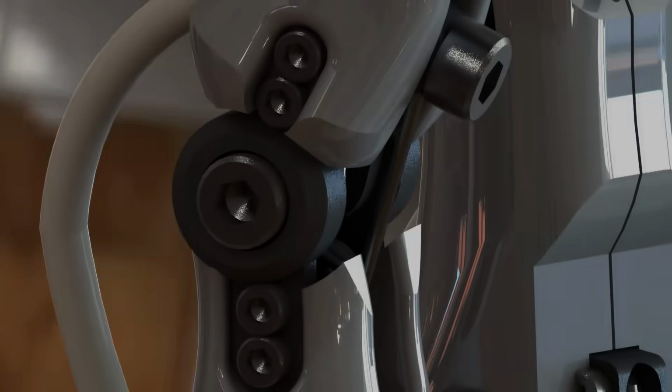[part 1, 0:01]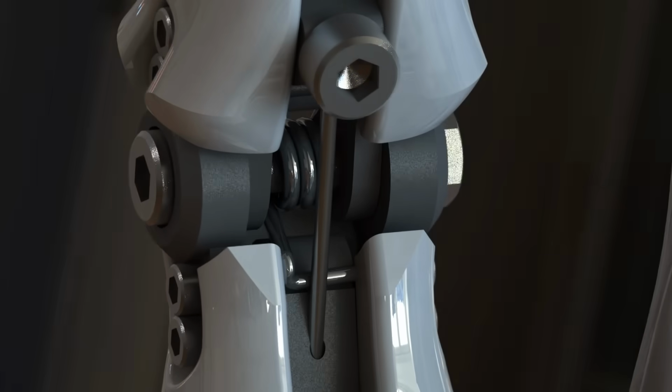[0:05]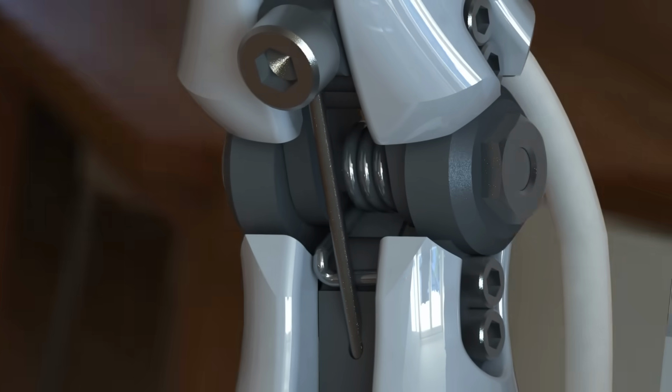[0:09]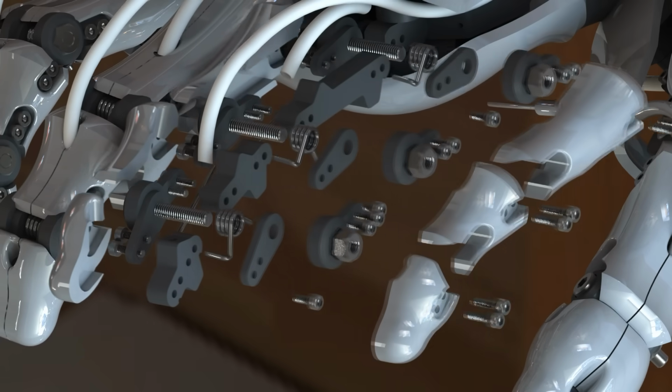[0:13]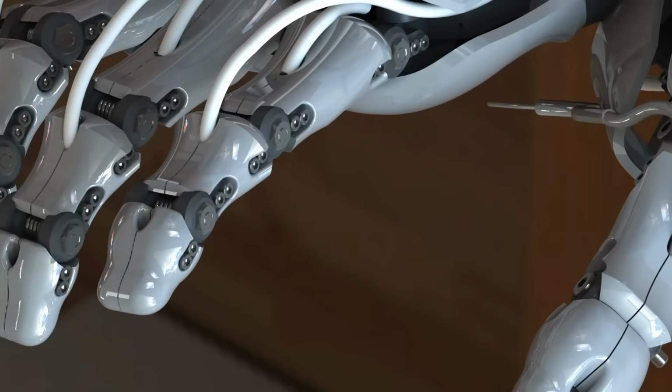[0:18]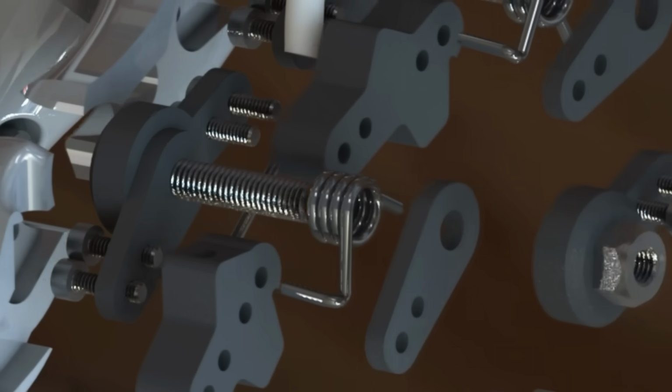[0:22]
So let me start off by talking about some of the joints in the bionic hand. The vast majority of the joints that you'll see are just simple hinge joints, and that includes all of the joints in the thumb, most of the joints in the finger, and a few others here and there. The way that these work is they have a simple pivot, which in this case is just a bolt. Now having a bolt as a pivot is obviously in no way ideal.
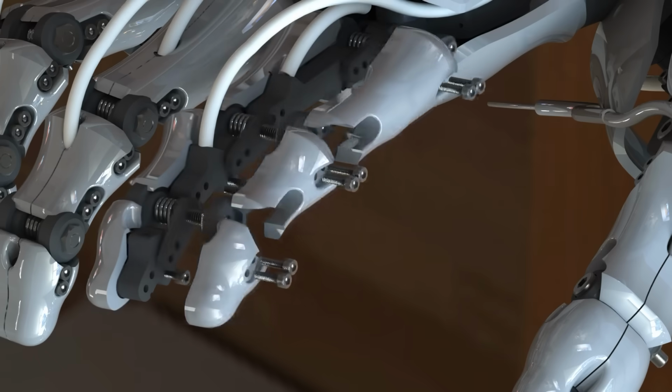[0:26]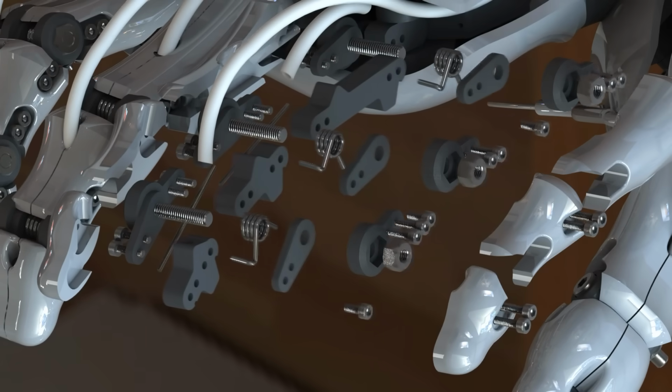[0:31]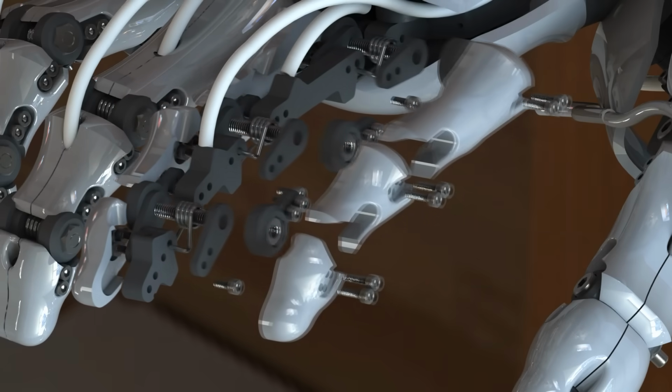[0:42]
The bolts are just kind of there as a placeholder. Obviously in a final thing I would have the bolt only threaded at the very end, so that it would have a nice long shaft to rotate around. But as a sort of proof of concept piece, the pivots are just these threaded bolts.
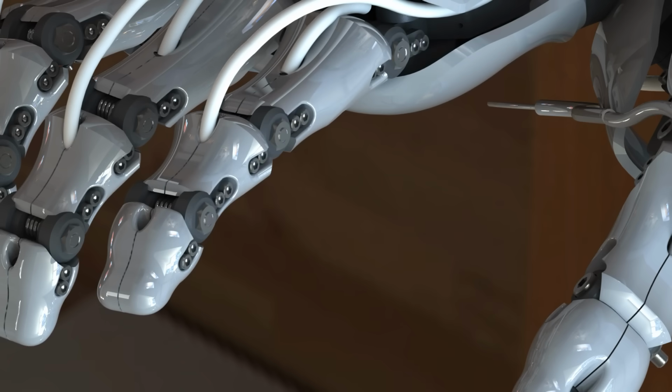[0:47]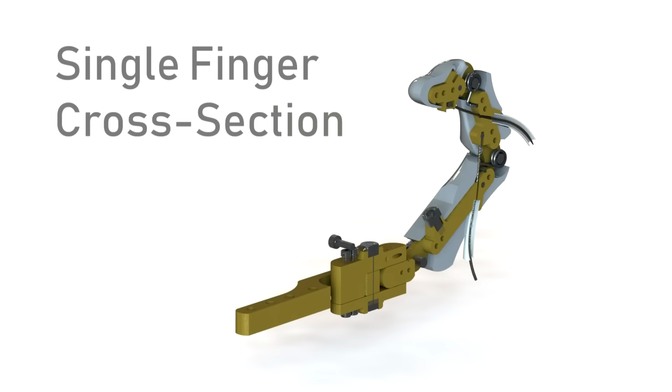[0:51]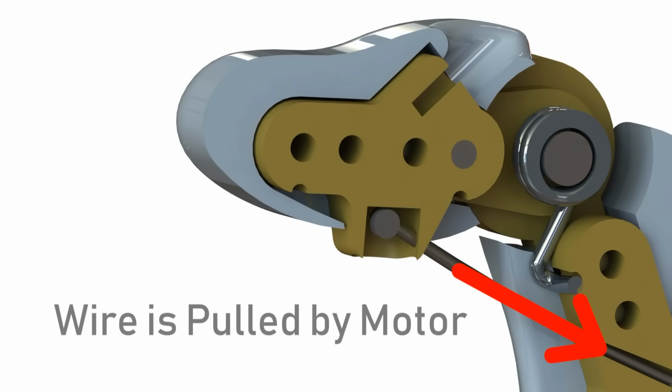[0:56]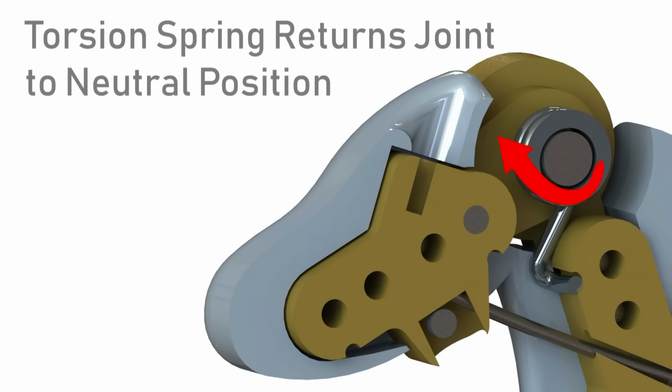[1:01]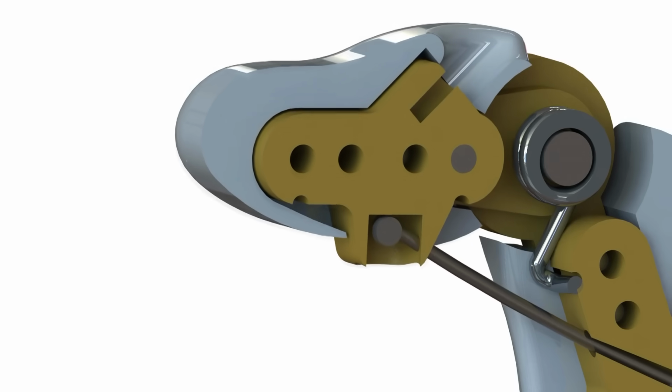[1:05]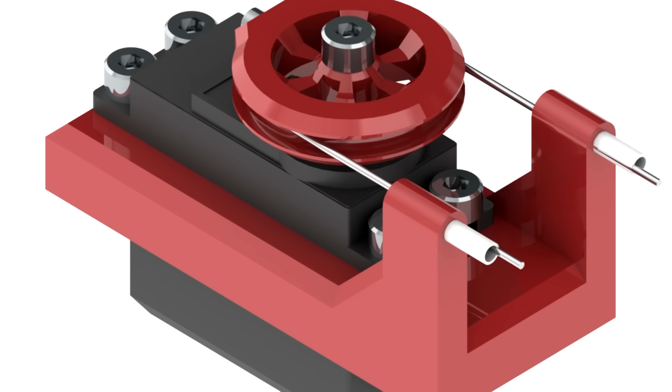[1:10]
Now the way that they're actuated is by using a sort of cable and spring arrangement. All the motors are mounted in the forearm, and those motors have little pulleys on them which pull some cable through a cable sheath. If you think of a brake cable in a bike, you pull the brake, which pulls a little bit of wire through the cable sheath, which actuates the brake calipers at another part of the bike. That's the same kind of idea here, except instead of a manual brake lever that you pull with your hand, it's a motor pulling the wire with a pulley.
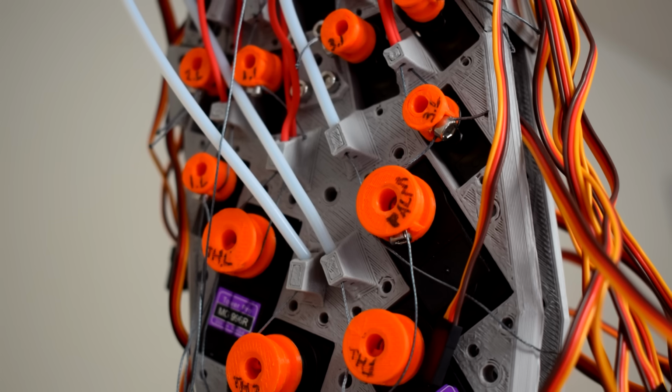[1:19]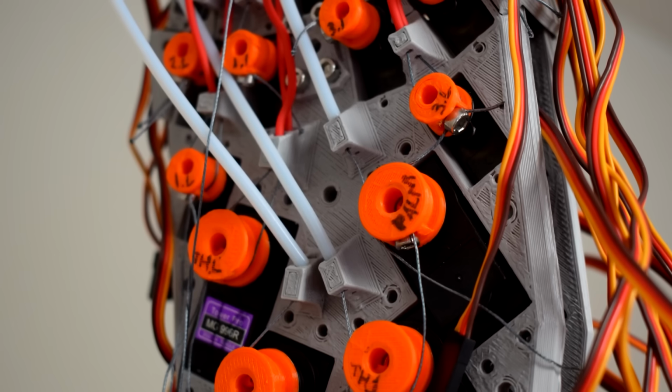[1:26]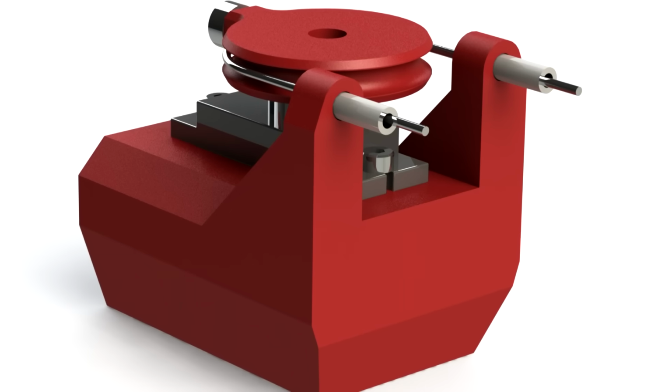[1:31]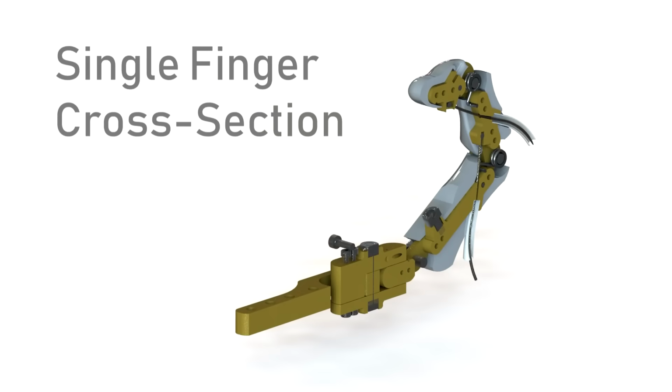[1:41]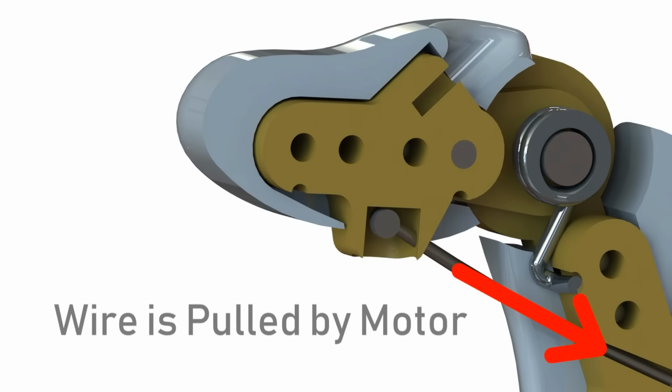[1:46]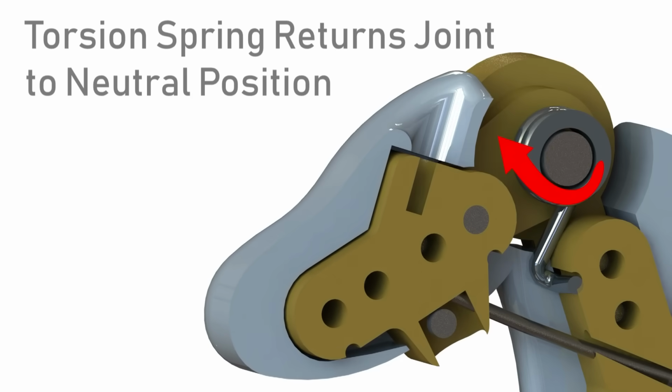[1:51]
So when the motor pulls the cable through the sheath, that contracts the finger by using the inner cable to pull the finger joint downwards, and then when the motor relaxes, a little torsional spring in the centre of the joint, wrapped around the pivot point, returns the finger back to a neutral position and maintains tension on the wire at all times. You'll see there's a little animation of this working. Hopefully that clarifies it if that explanation wasn't satisfactory.
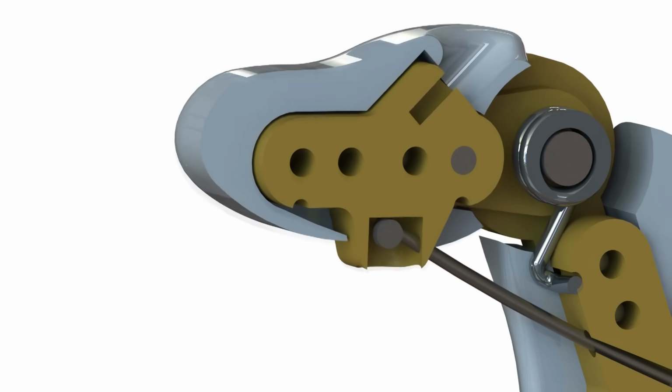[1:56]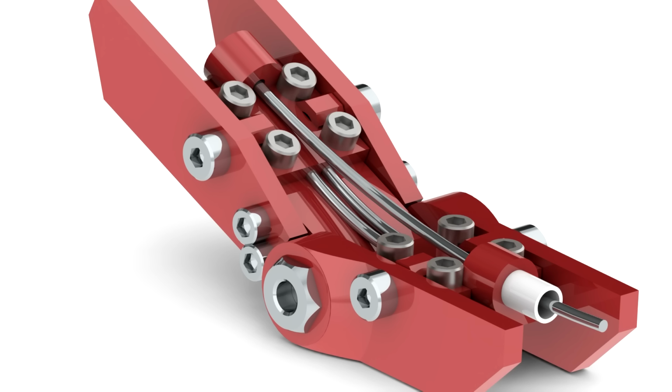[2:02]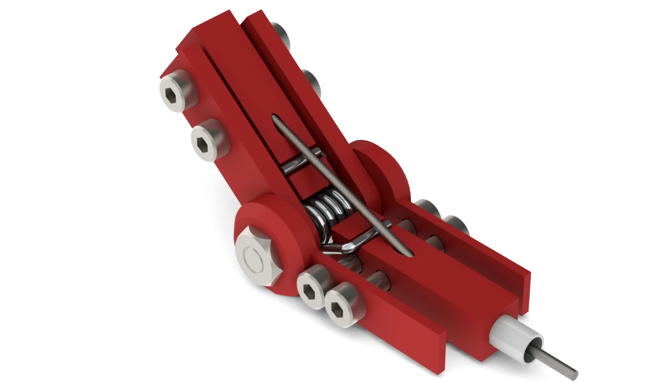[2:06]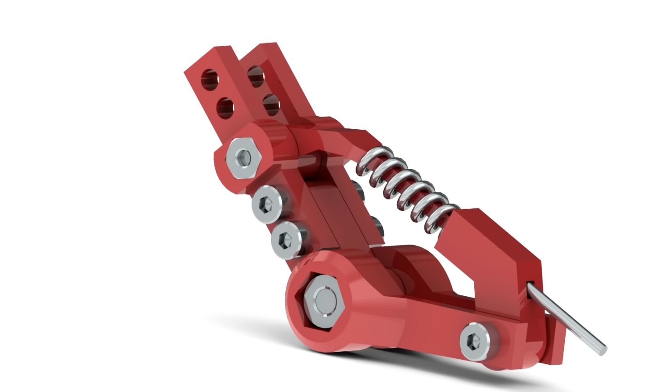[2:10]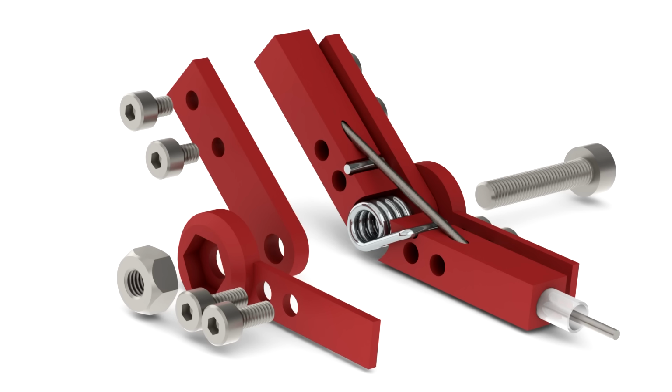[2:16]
Now this sort of cable arrangement is something that's used quite often in animatronics because it's quite easy and simple to actuate something and make it do some quite complex motion without having to have any actuators in the joint or near it even. It can be as far away as you like. But obviously there are some inherent problems with this.
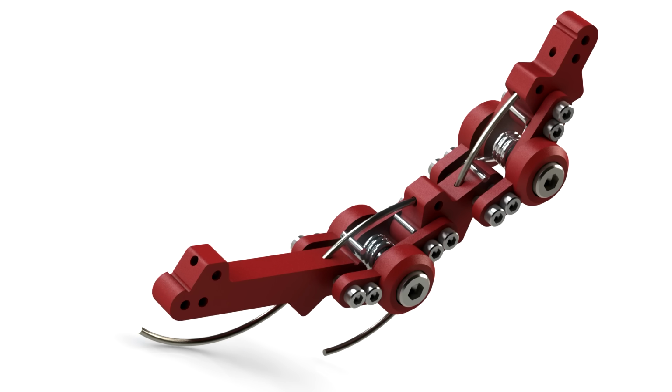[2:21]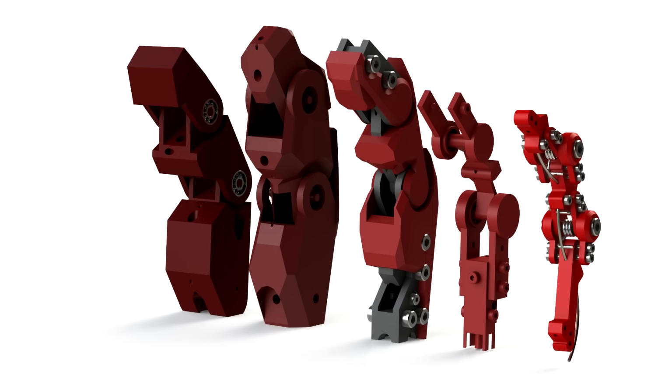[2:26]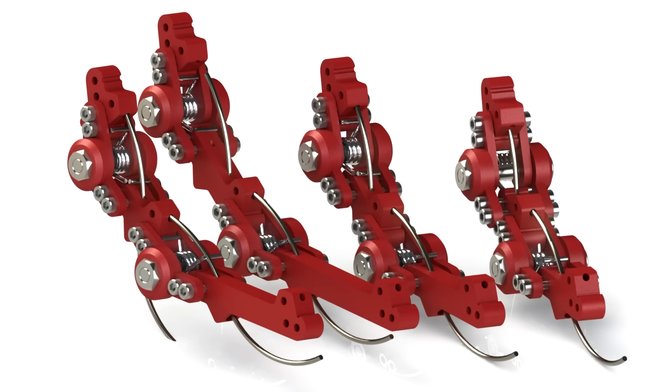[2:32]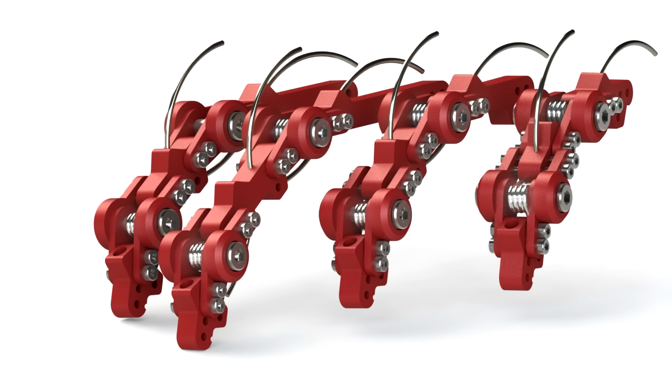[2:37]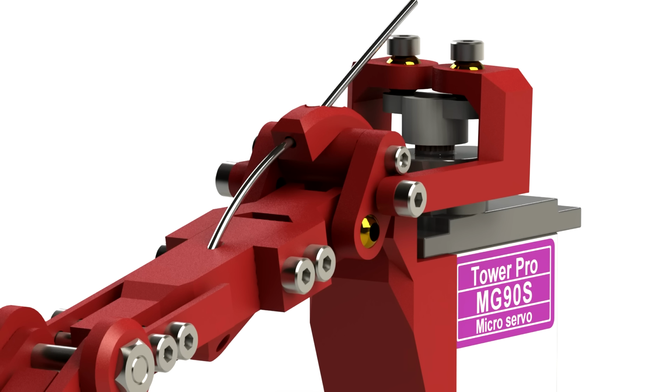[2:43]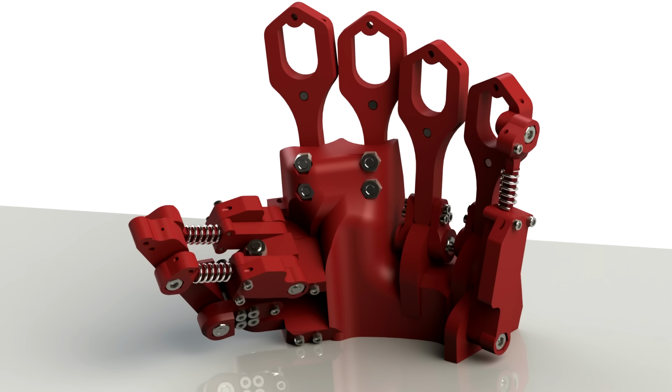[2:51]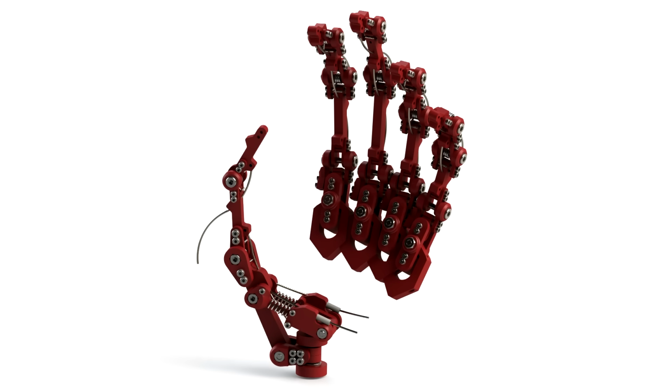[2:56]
The further the distance you put between your actuator and the thing that you're moving, there's a lot of wiggle room between all the components in that chain, and so eventually it is inevitable that components will come out of calibration. Eventually the fingers won't be in quite the same positions as they were to start with, and because the inner cable has room to move in the inner sheath, as the fingers move around and the outer cable is moved around, there's the potential for the fingers to move slightly, just as the tension of the inner cable is moved slightly.
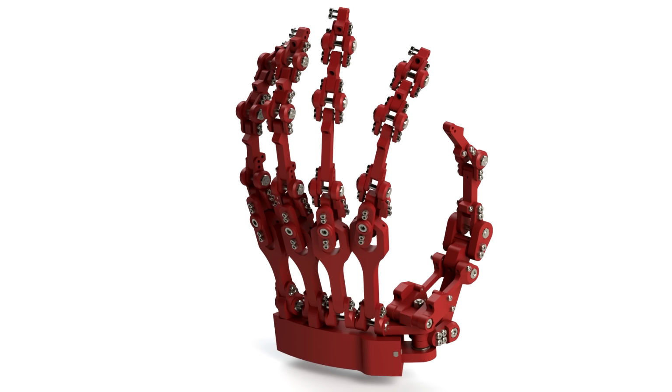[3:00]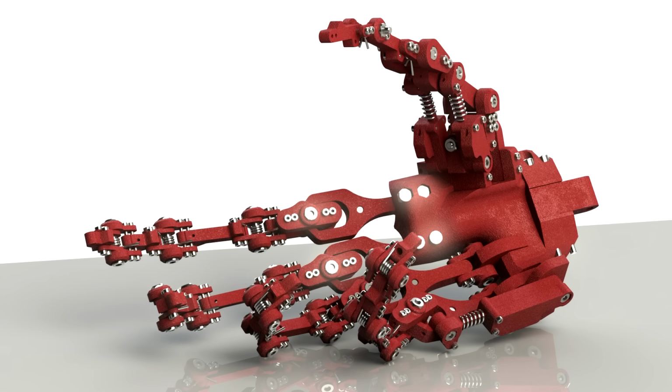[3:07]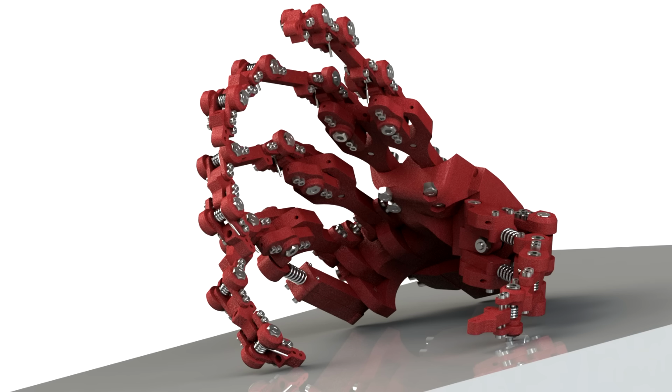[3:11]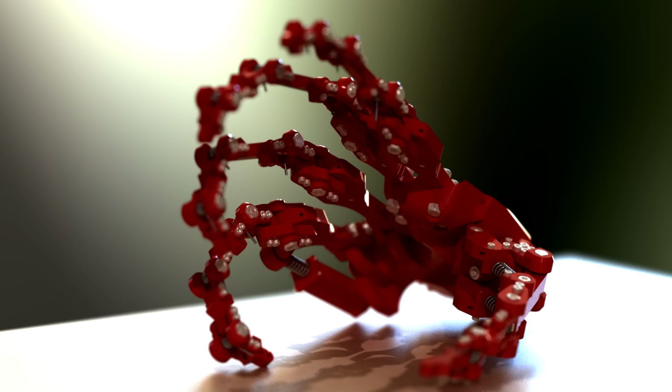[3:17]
If you had an inner cable that was the exact same diameter as the inner diameter of the outer cable, if that made any sense at all, then you wouldn't have to worry about it, but you would obviously have to worry about friction. So for something where you're trying to just get a really lifelike motion and you're not too concerned about the accuracy, then it's not too much of a problem.
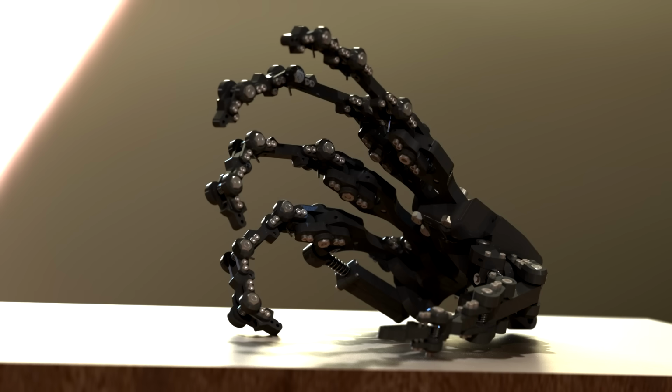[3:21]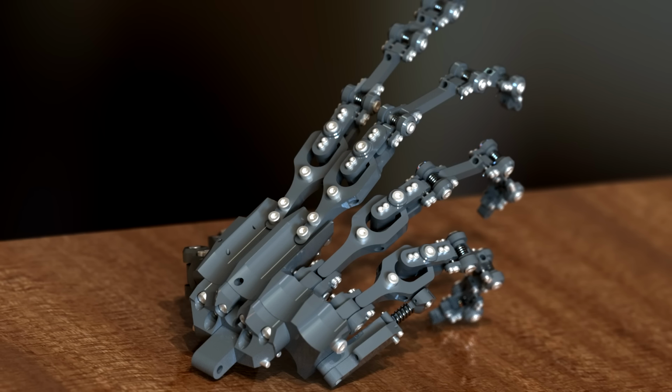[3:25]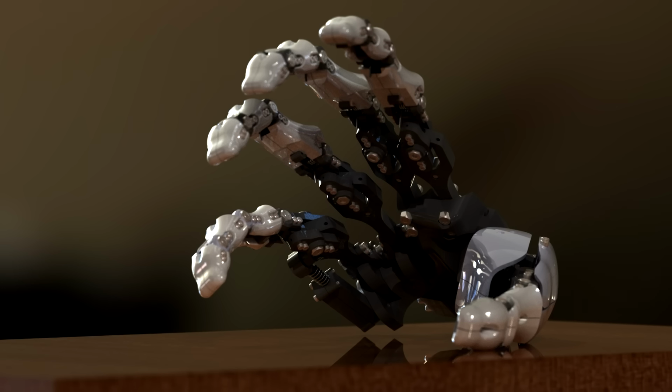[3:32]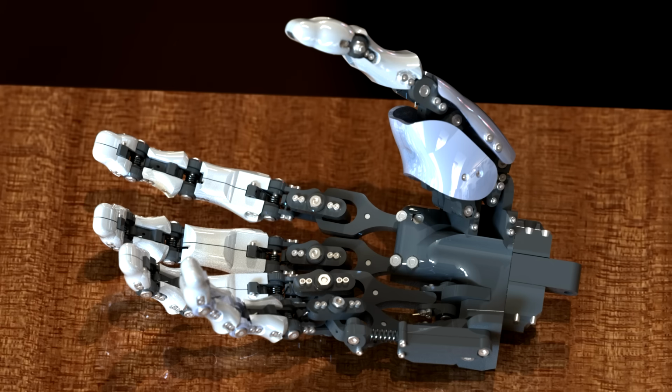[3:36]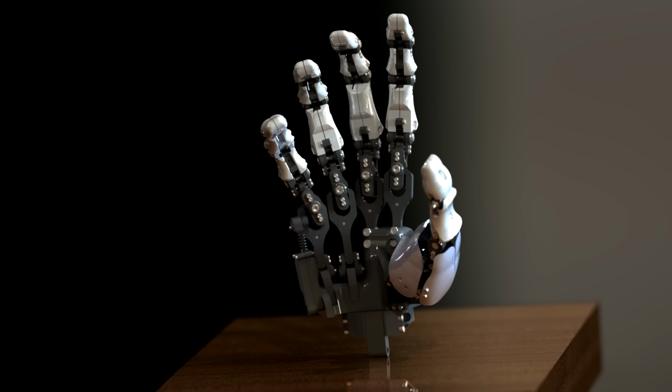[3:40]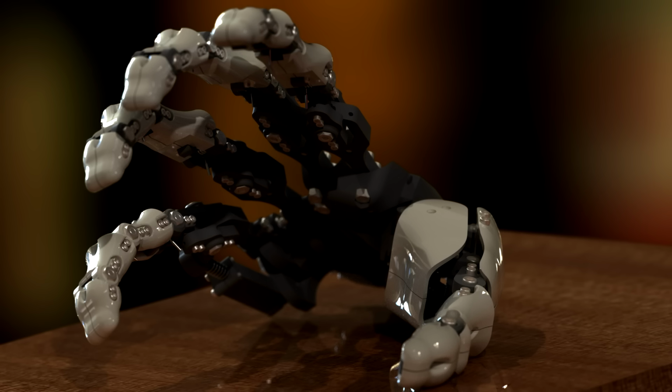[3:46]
The solution would be to have a feedback sensor in the joint itself, like a feedback sensor in every single joint, and then it could be more or less perfectly accurate every time. But obviously that would add a lot of complexity to the assembly. It is something that could be done, it wouldn't be too much trouble. Using the kind of really small potentiometers that are used in the control glove, there's no reason why you couldn't have something like that. And maybe in a future redesign that will be something to think about.
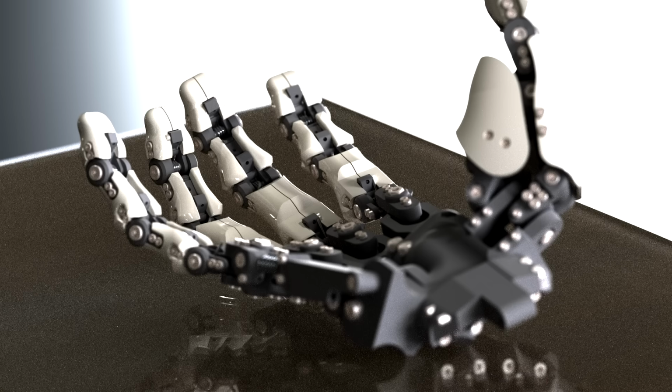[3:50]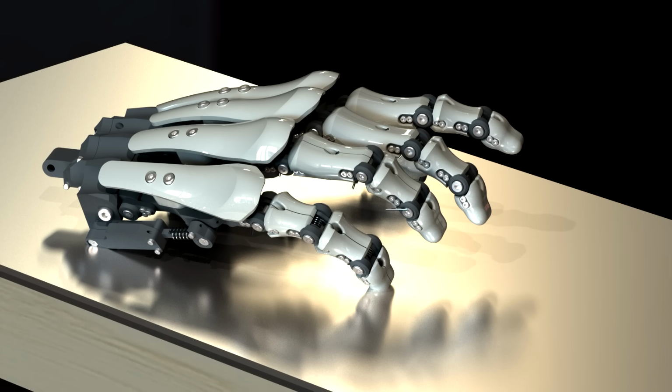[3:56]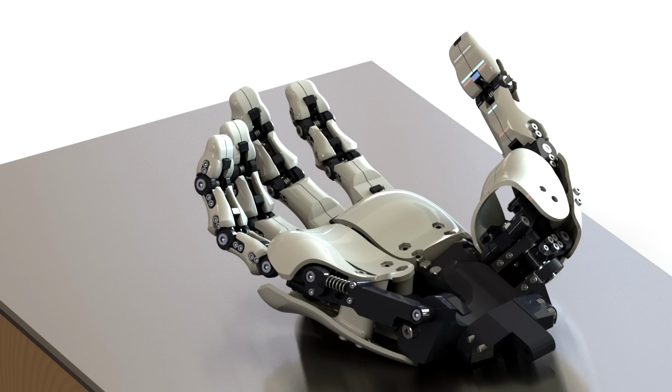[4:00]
If this was used as a real prosthetic hand, you would need something like that, absolutely, because you couldn't be recalibrating it all the time, it just wouldn't be practical. So having a feedback potentiometer at every single joint would probably make the design a lot more reliable.
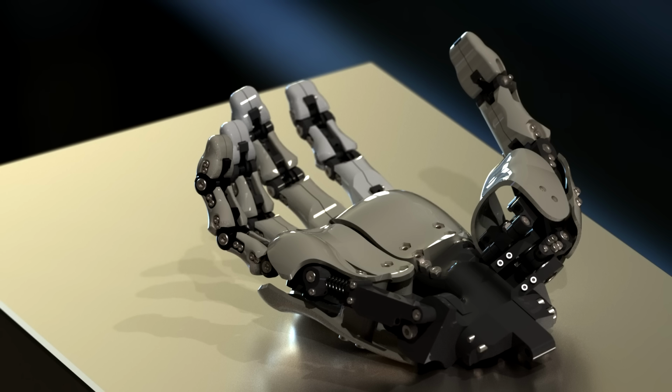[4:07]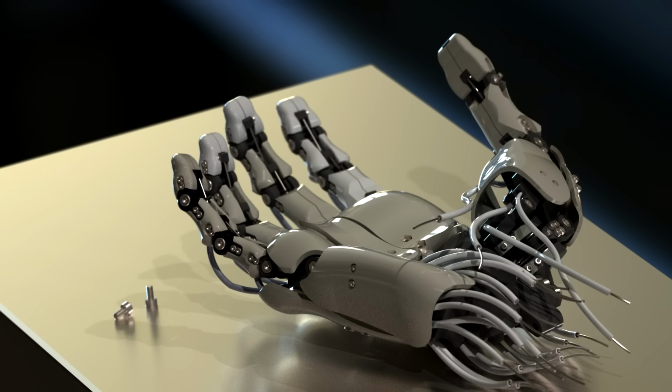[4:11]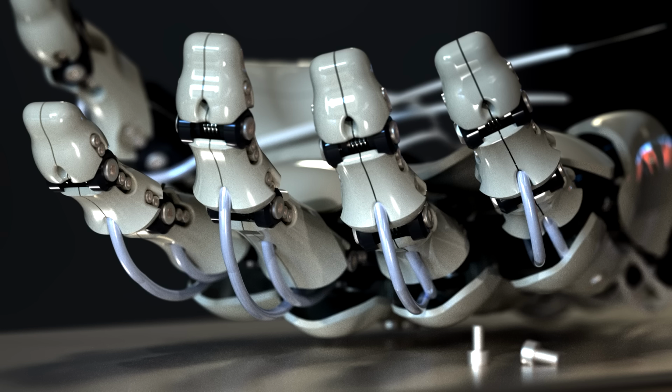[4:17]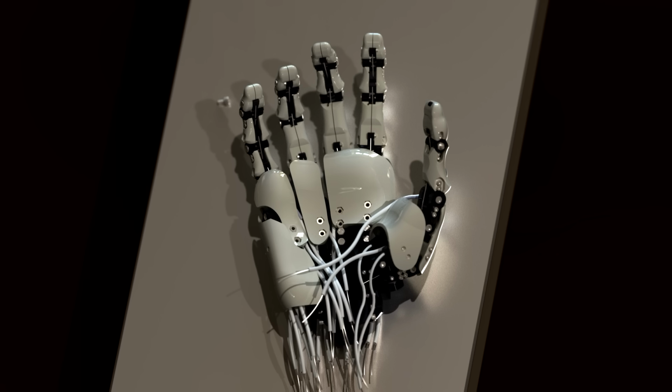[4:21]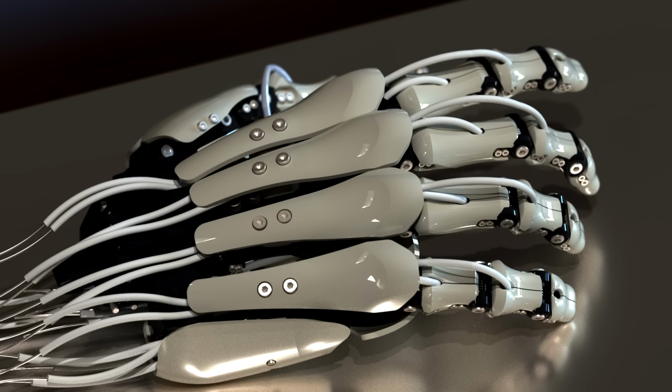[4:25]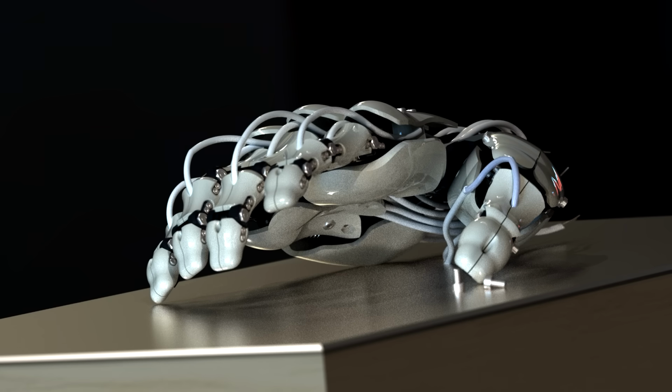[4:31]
But regardless, there'd still be some problems with the pulley mechanism, and most of them you could make a lot better just by using tighter tolerances between the inner cable and outer sheath, things like a better pulley and a better securing mechanism on both the pulley and the point that you're actuating. There's a million little tweaks that you could make that would make this a lot better, but in the demonstrations it did seem to work sort of okay as a proof of concept, you know.
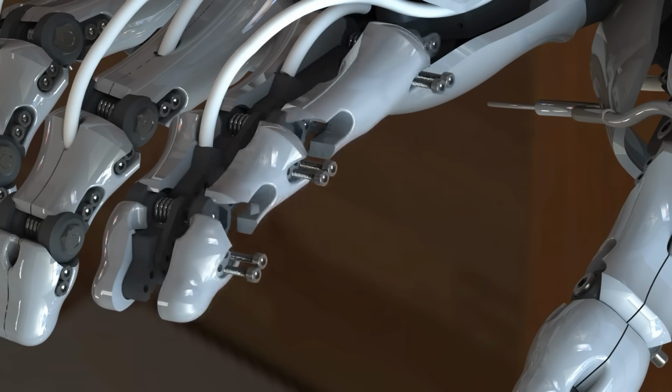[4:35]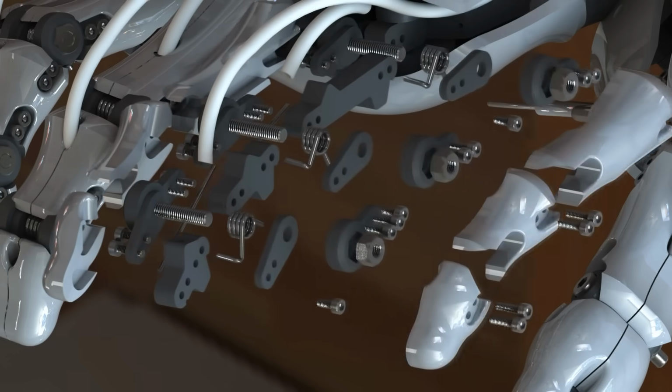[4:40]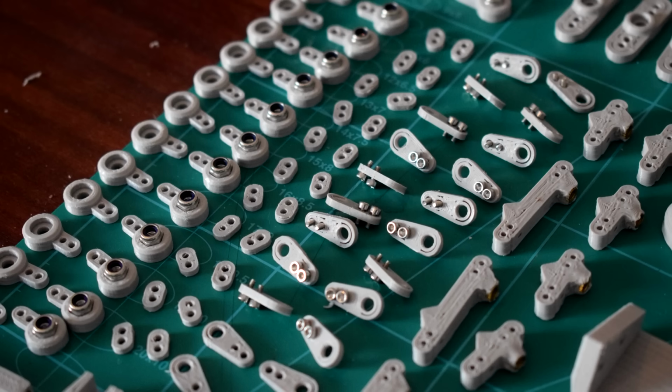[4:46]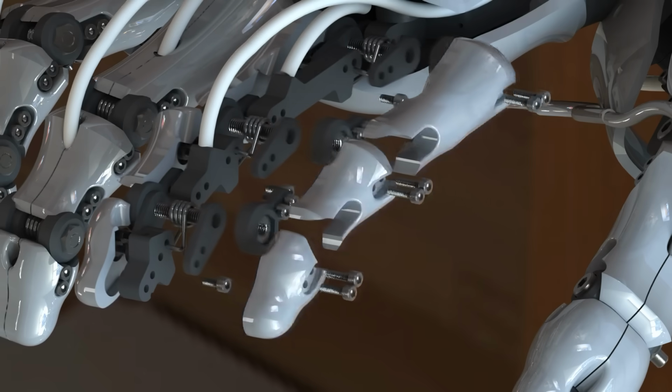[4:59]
So one quick other point I want to make about the hinge assembly. Looking at the exploded view, you can see there's like an unbelievable amount of components in this hinge, when really there only needs to be the two parts that are moving relative to each other and the pivot point, which is the bolt that's going through the centre. There isn't really too much need for any other components than that.
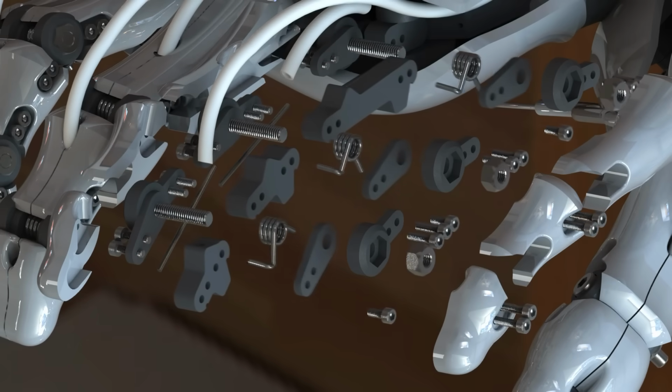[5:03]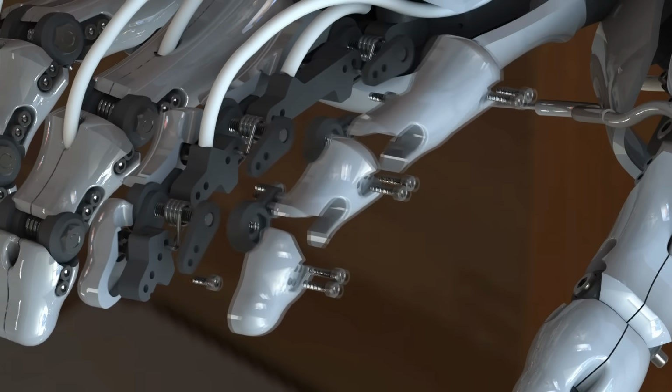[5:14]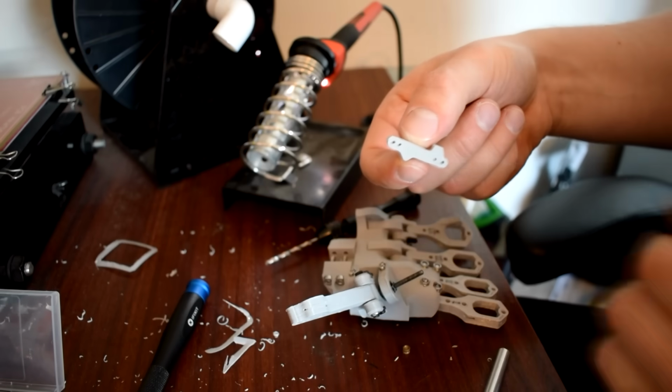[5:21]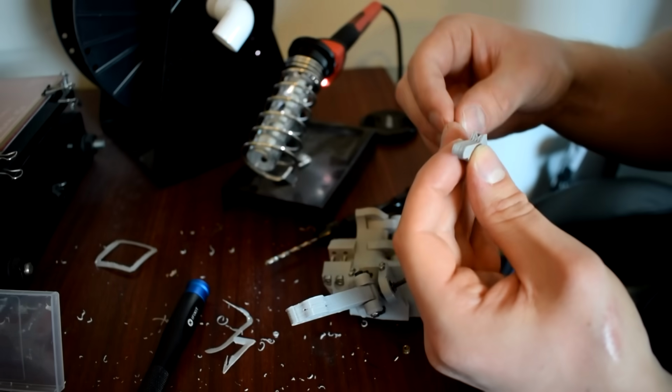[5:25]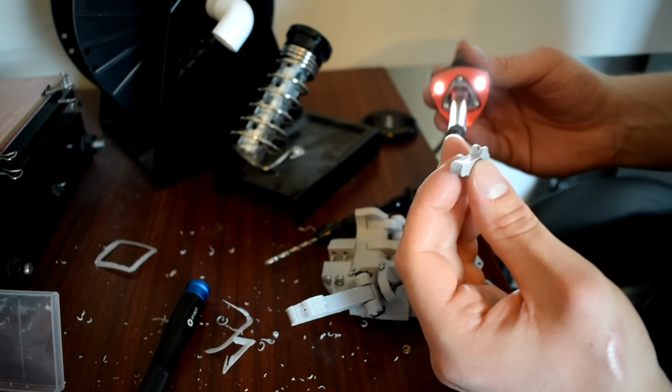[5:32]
It's just because I had this really weird idea of how strong 3D printed parts were, based on the sort of bad experiences that I'd had with my cheap printer, which is now running a lot better because of some upgrades I've made. It's also just because I wanted it to be as strong as it possibly could be, and I didn't really realise that PLA can actually be really strong. But when I was designing it, I made it so that very few parts that I printed would have any sort of holes running through any side faces, and the vast majority of the holes would just be up through the Z-axis of the 3D printer.
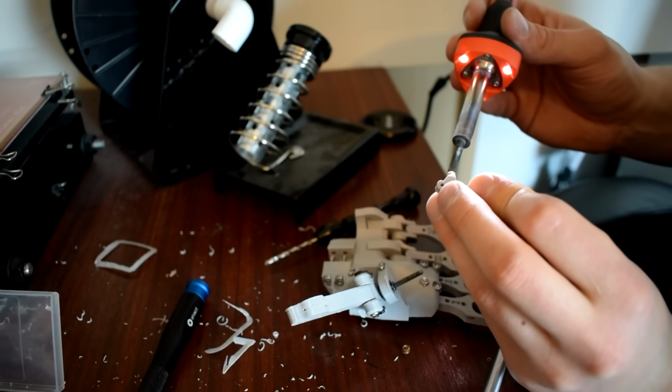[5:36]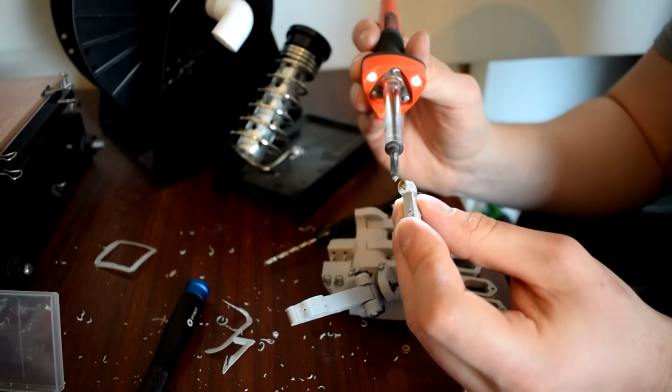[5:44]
And I also tried to print everything in really simple shapes, no overhangs, you know, just as simple basic shapes as possible, so my 3D printer would be able to print them quickly and strong. But I think I was seriously overcompensating for the limitations of 3D printing, because I've ended up with this design that has way too many parts and way too many fasteners.
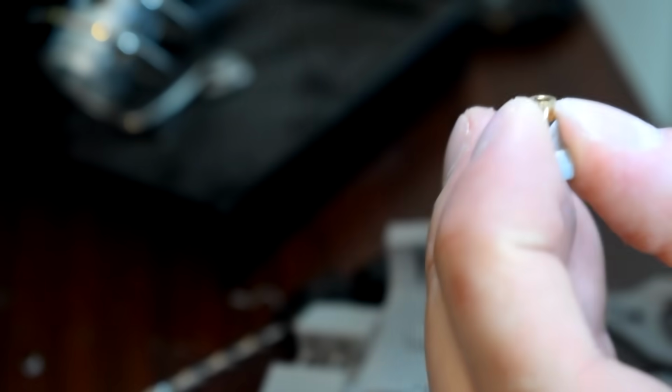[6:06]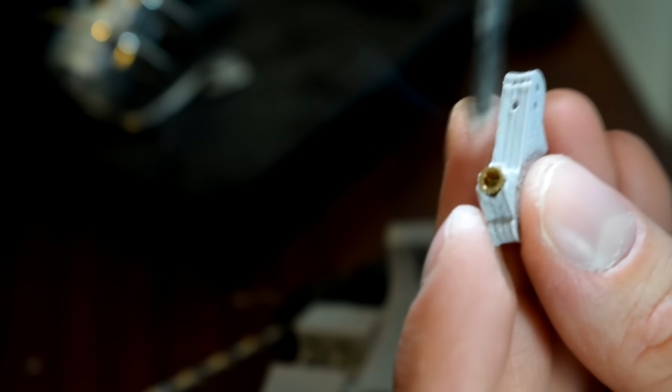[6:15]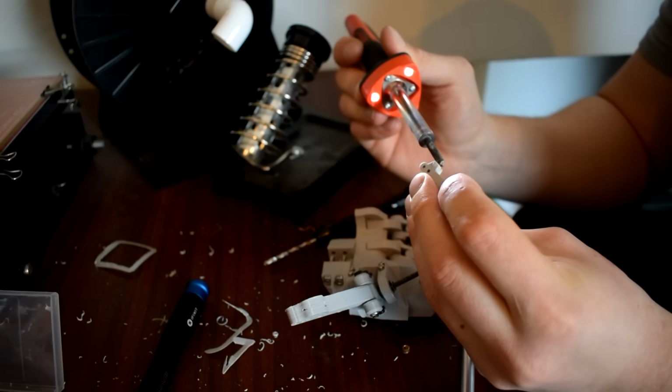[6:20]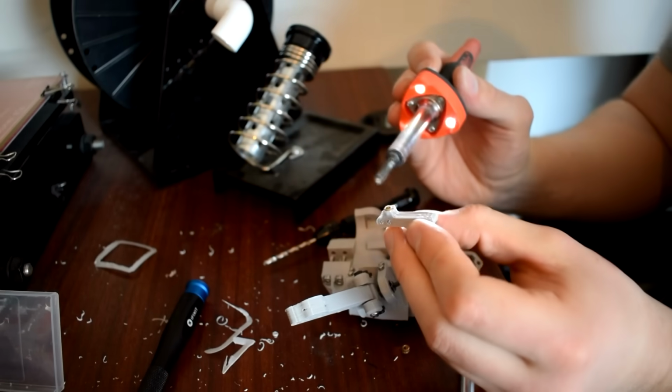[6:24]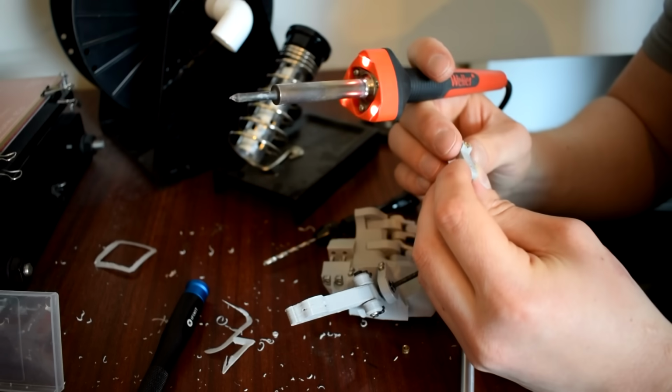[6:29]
And the other thing was that because I had to do so much 3D printing during this project, my 3D printing skills actually increased massively, to the point where I'm much more confident printing odd shaped parts now. And really, even on my cheap printer, there's nothing wrong with doing that sort of thing, and it can be made really strong. But honestly, it probably makes it look a bit cooler than it really is in the renders, having all these bolts. But I think in a future redesign, I definitely want to redesign it to have as few fasteners as possible.
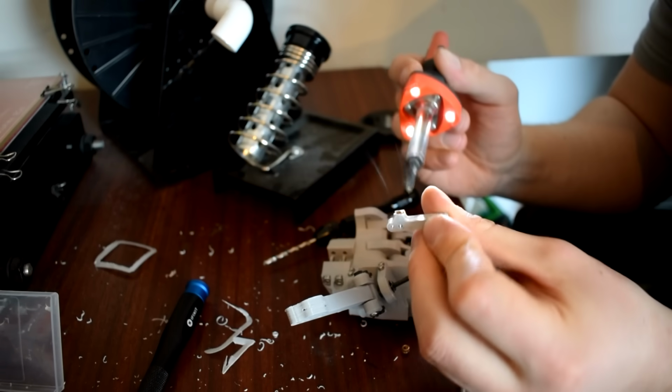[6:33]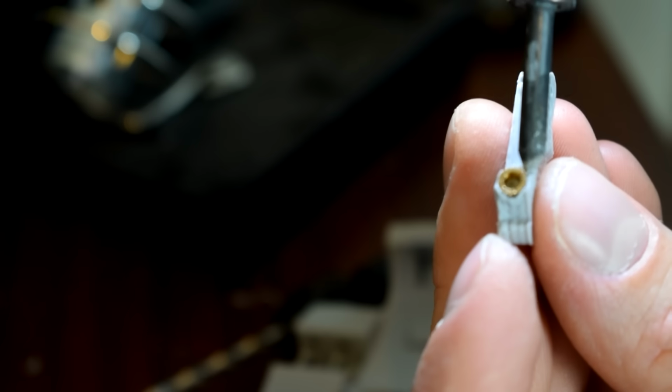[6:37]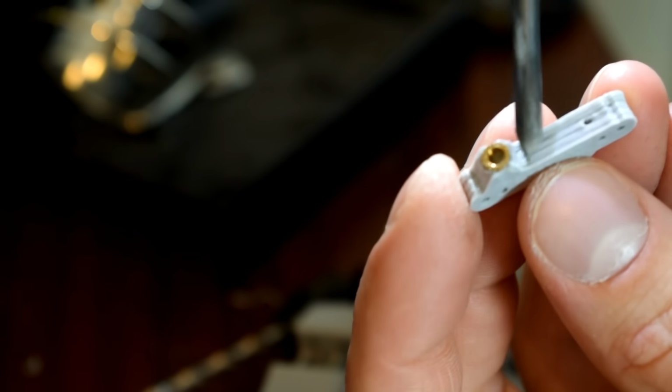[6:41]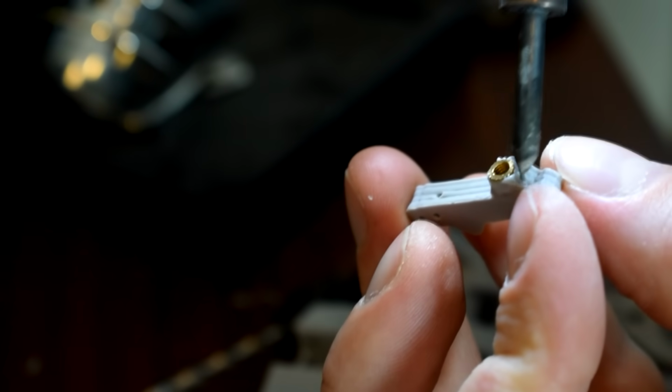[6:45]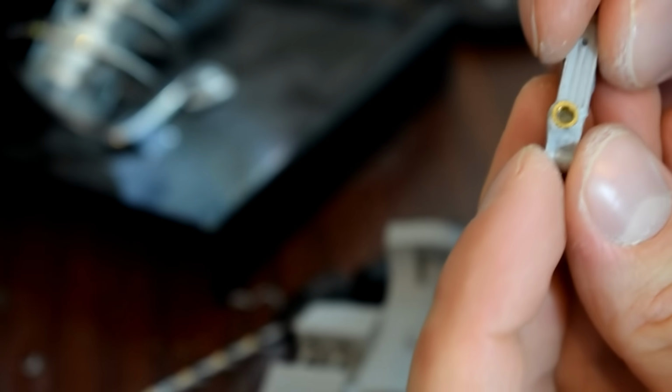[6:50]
Like, I was thinking even the shell components could be snap fit. I've become a lot more confident with designing two different 3D printed parts to fit together, and the sort of tolerances you need between them to be able to achieve that. This also leads into another really big problem with the design, and that's that I've limited myself almost entirely to 3D printed parts. I'm going to talk about that in more detail a bit later on.
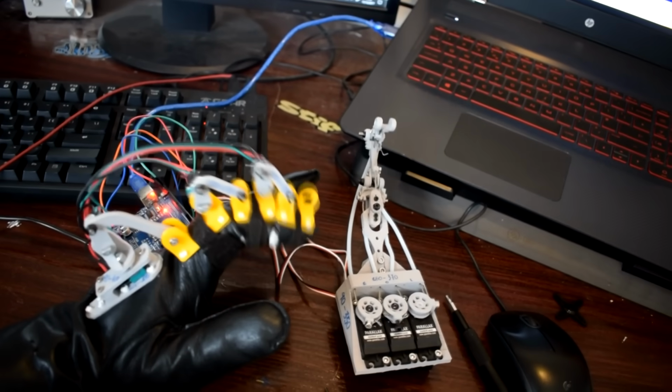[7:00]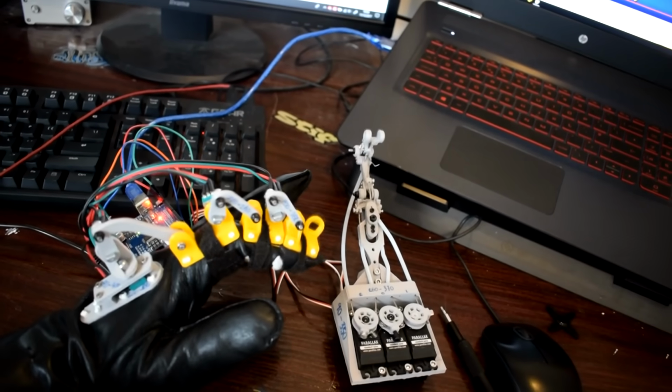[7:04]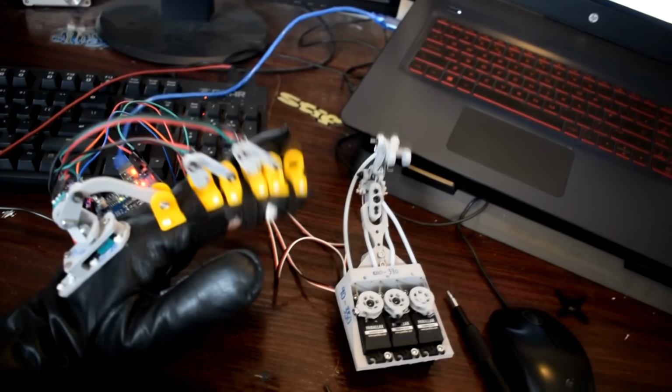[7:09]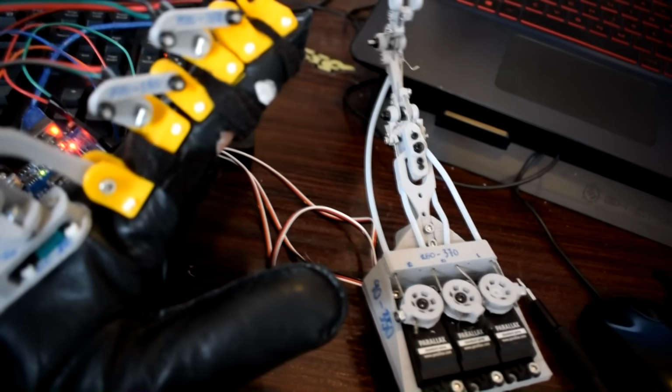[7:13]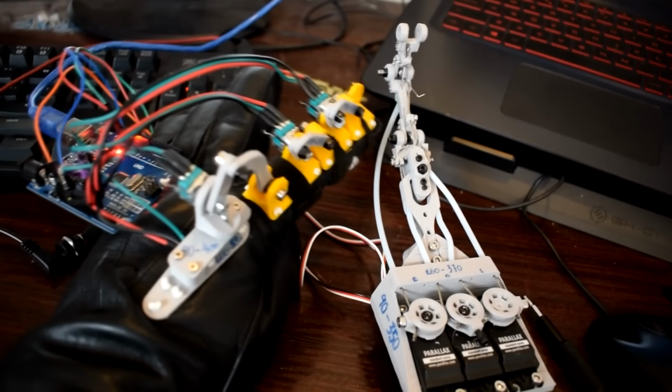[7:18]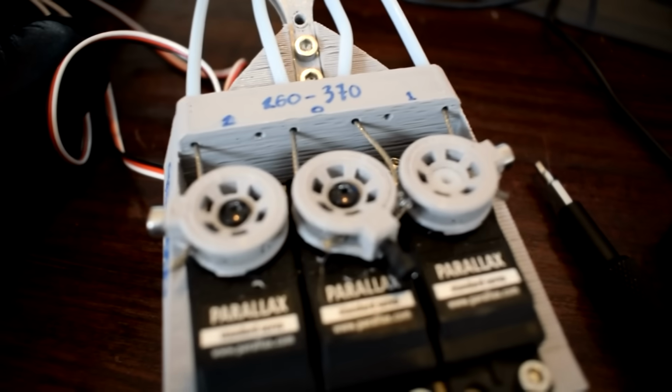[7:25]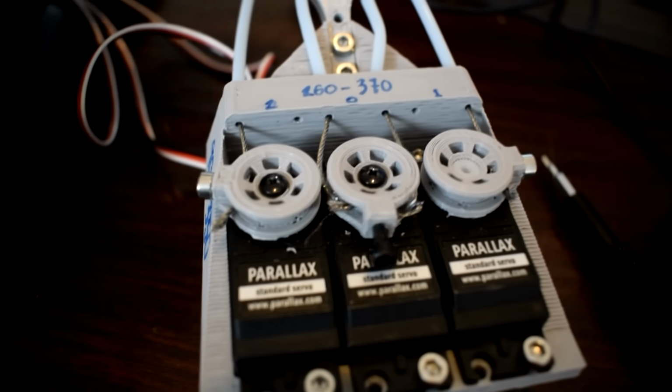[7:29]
So, going down to the knuckles of the fingers, these are MCP joints. I believe they're called metacarpophalangeal joints. In a real hand, these are condyloid joints, which is like a weird ball socket joint, but rather than being a ball, it's kind of like a sort of ovoid shape. So when the finger moves, the two axes of motion are quite easy to see. You can see it can go up and down, or it can go left and right.
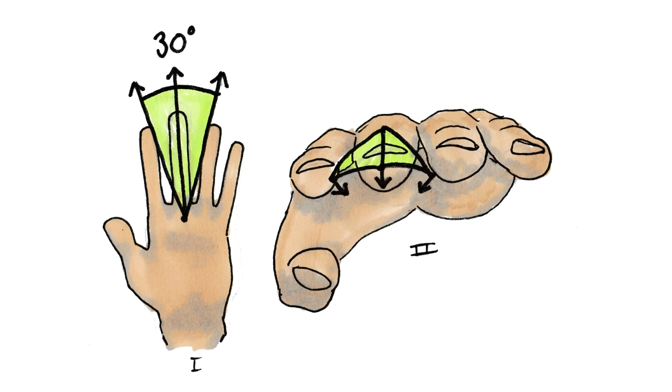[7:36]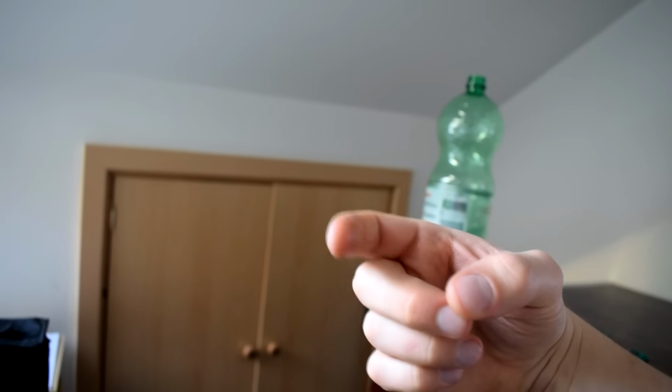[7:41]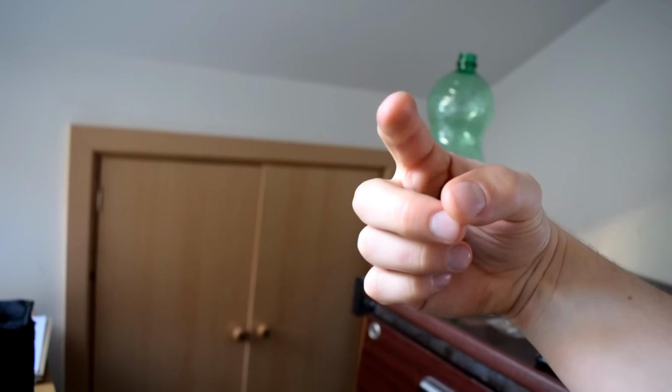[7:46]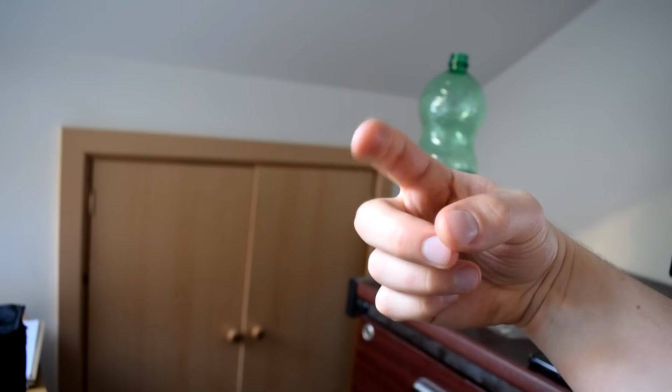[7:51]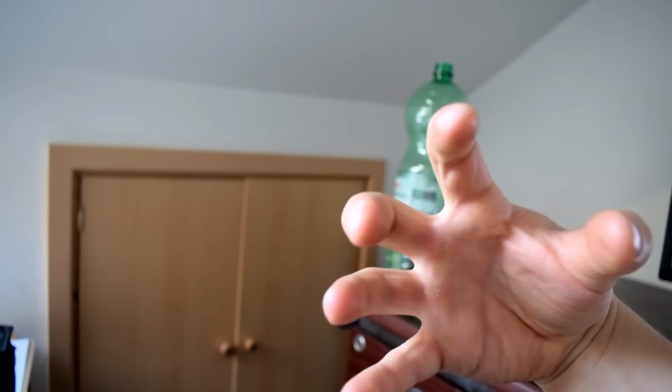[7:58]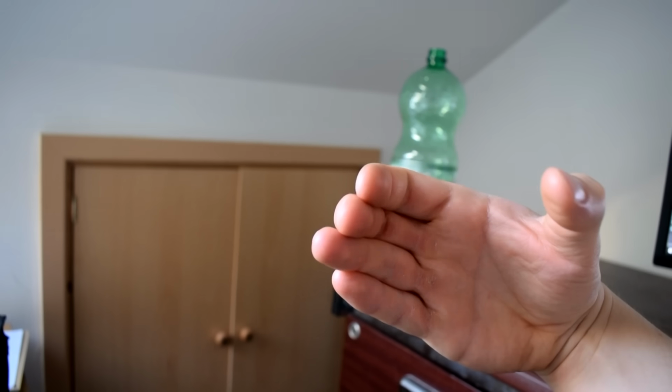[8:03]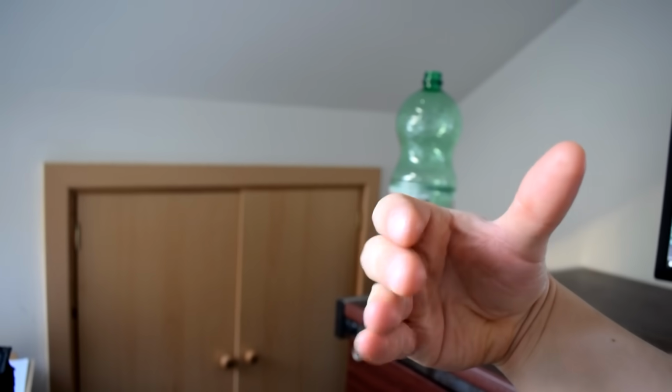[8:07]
But you'll also notice that the finger turns inwards slightly. It sort of points inwards towards its axes of rotation when it's moving left to right. And this is something that I thought would be quite important for certain grip types. Things like if you wanted to pick up a ball, and you splay your fingers to go and pick up, you know, like a large ball, you'll see that your little finger and your index finger sort of curl inwards, and I thought that would be quite an important sort of grip configuration to be able to pick up something like a ball.
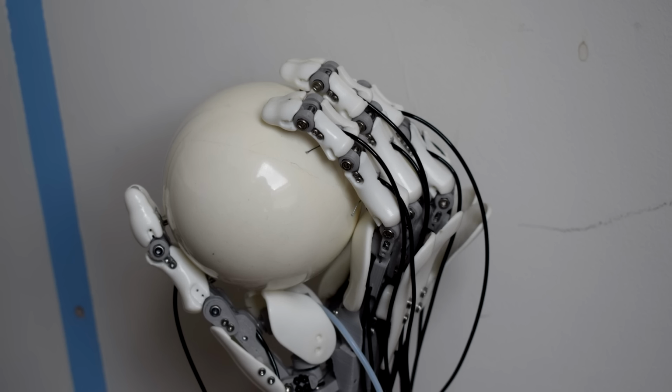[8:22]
So I thought for a really long time about how I could make a mechanism to, without really overcomplicating it and adding too many actuators, automatically have the finger twist inwards as it did the lateral side-to-side motion in the MCP joint. So I drafted a few ideas, and I decided that it'd be best just to simplify it to two axes, like a double hinge joint.
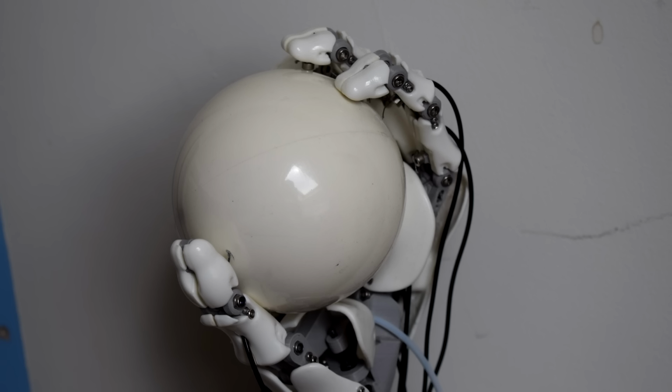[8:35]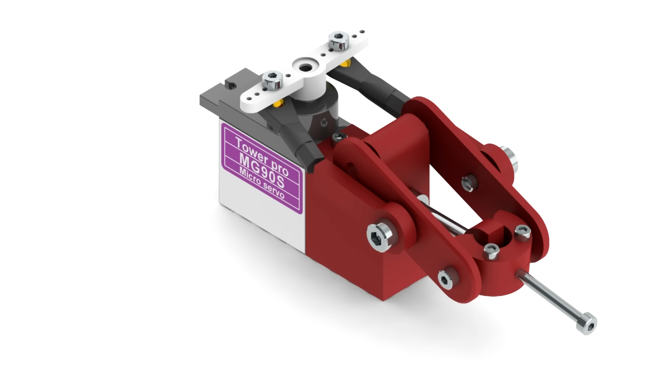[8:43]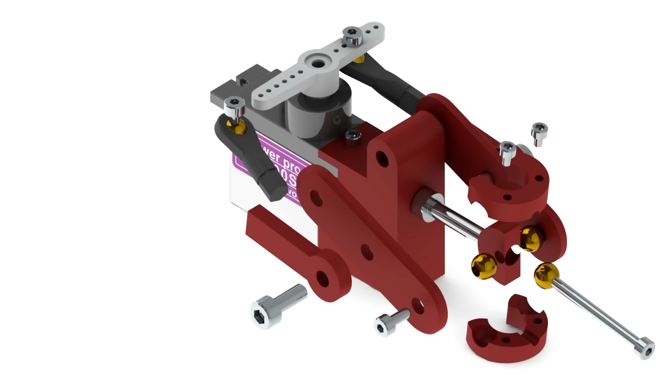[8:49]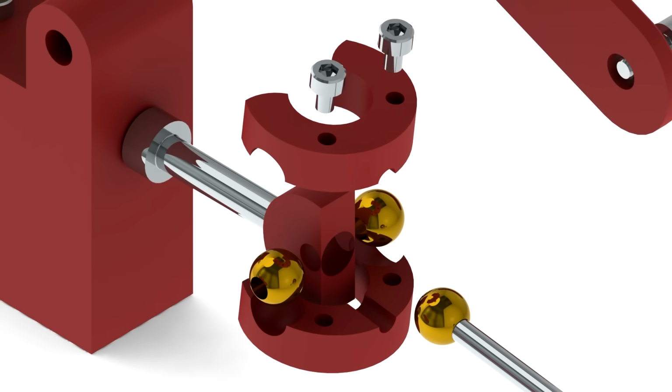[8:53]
Although it still sort of bothers me that I didn't manage to find a solution to that, and I feel more confident now that if I went back I could think of a better way to do it. I'm fairly certain it would be possible. I thought of some ideas of how you could do it with some sort of linkage assembly, but I couldn't think of a way to make it strong enough, and definitely not with 3D printed parts. It just wouldn't be strong enough.
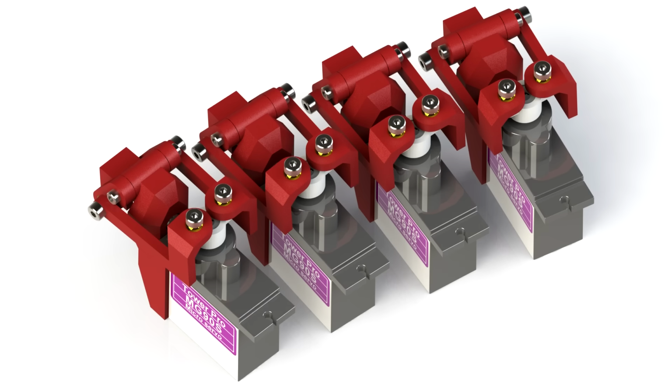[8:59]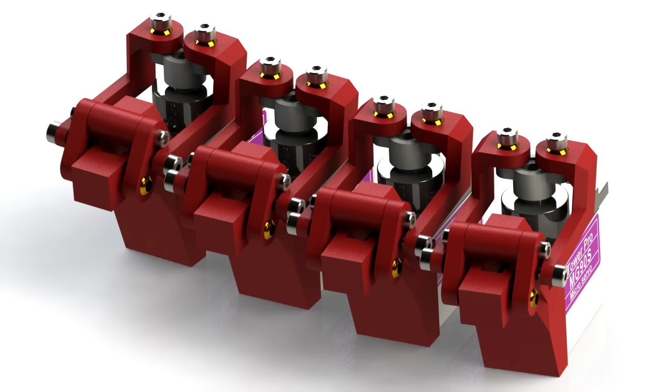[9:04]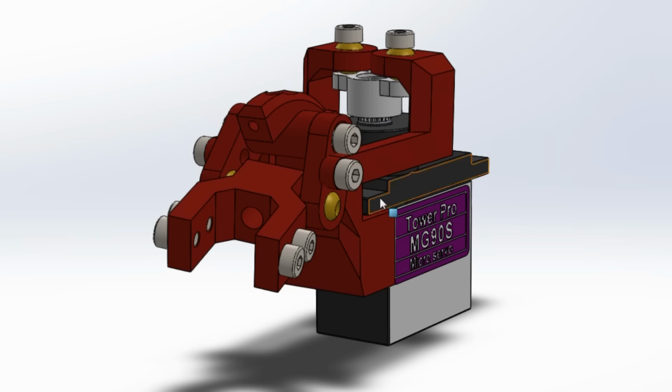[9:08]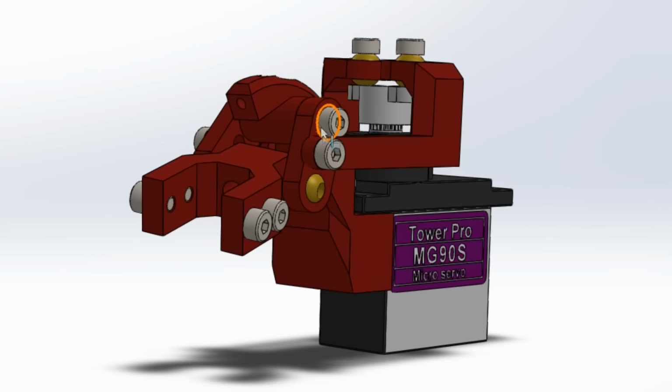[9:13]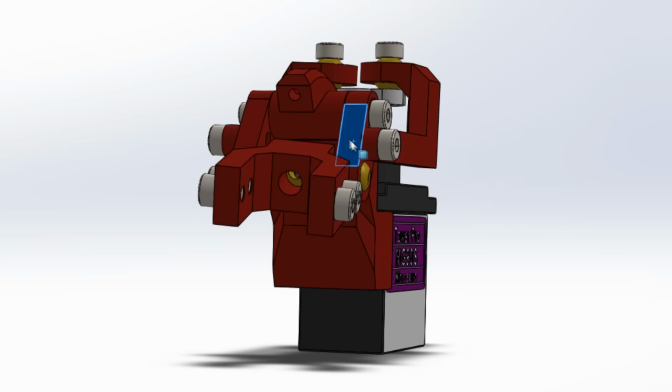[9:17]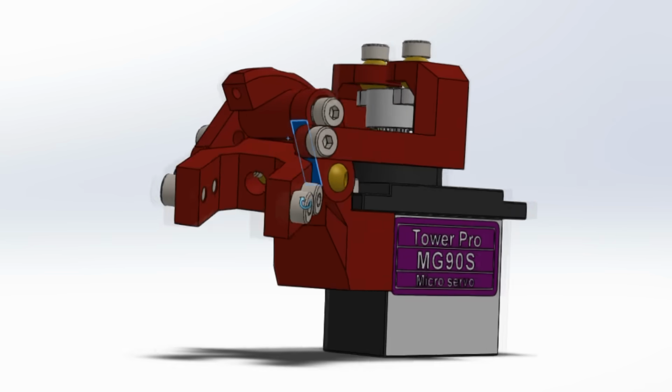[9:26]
But that's actually where I started designing the assembly, because I was really keen on having that little twist inwards, and that's the point that I started building the hand from, just because I was so insistent on getting that range of motion, but I couldn't figure it out. I made some assemblies and had some ideas, and I got something that sort of worked okay when I simulated in SolidWorks, but it wouldn't really have been strong enough to have any real force going through it, so I ended up just simplifying it to this double hinge joint.
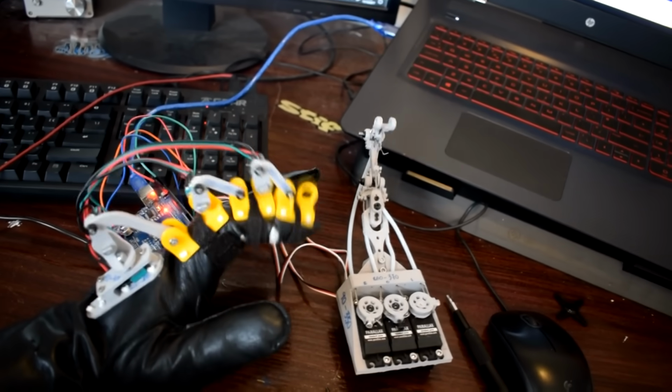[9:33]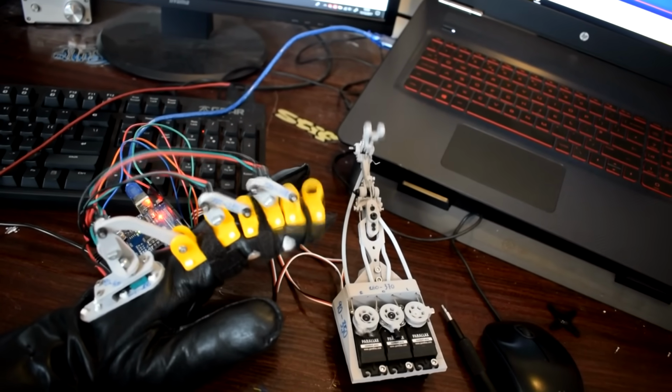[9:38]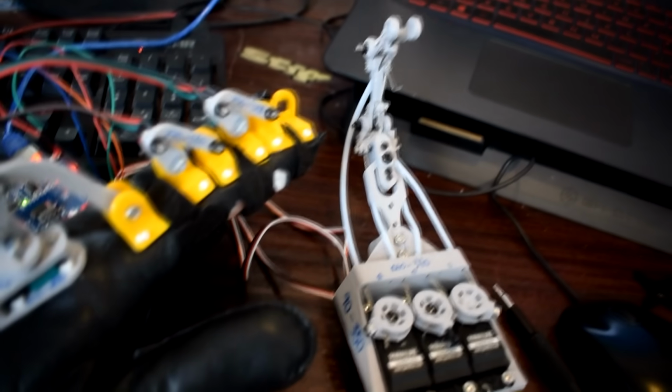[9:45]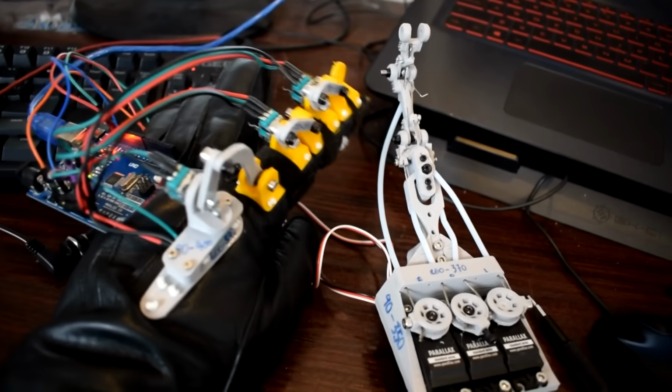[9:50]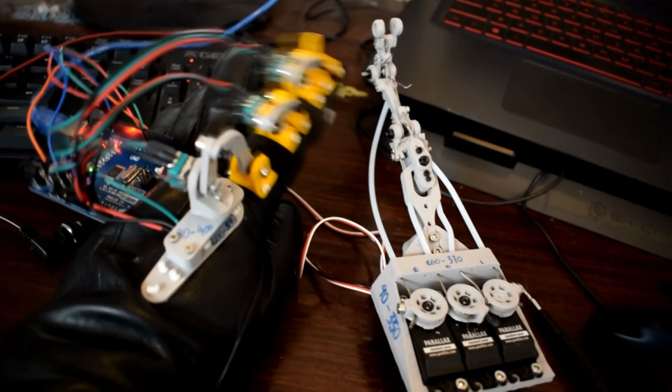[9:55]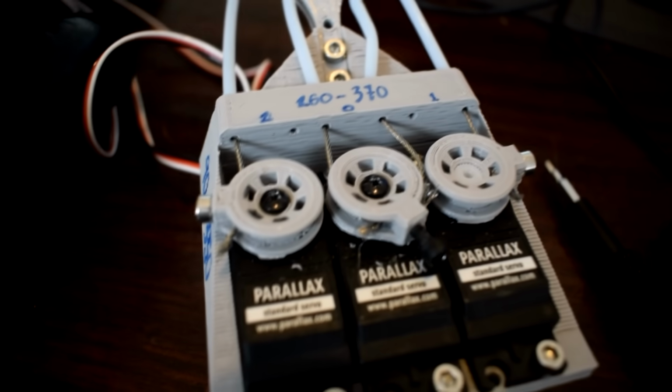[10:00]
So there's nothing really special about this design. There's a joint in the centre that allows it to move left to right, and a joint that allows it to curl. It should be noted though that the lateral movement, rather than using a torsional spring like all the other joints, has cable from both ends of the pulley, so rather than use a spring to return it back to a neutral position, it sort of pulls from both sides. So that's useful because I wouldn't know which side would necessarily need to be exerting more force, so the left and right movement should move with an equal amount of force.
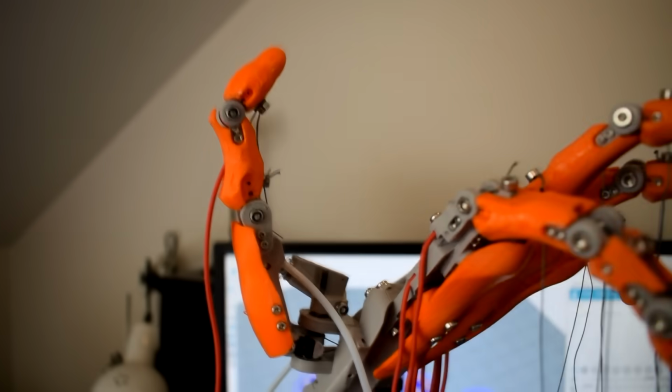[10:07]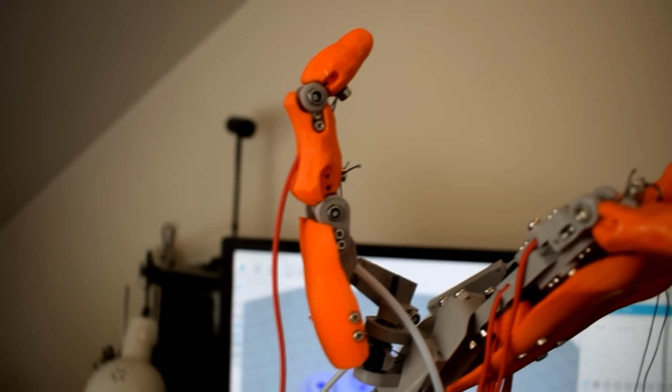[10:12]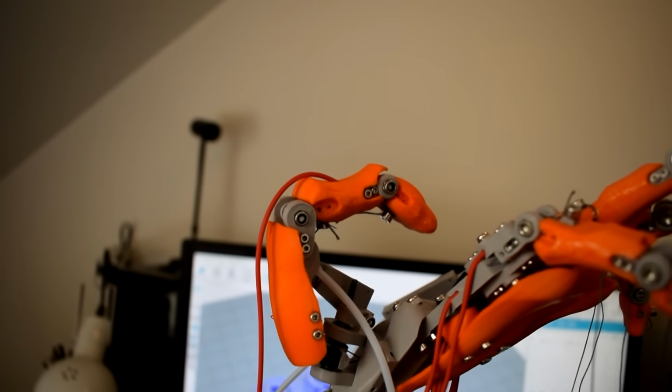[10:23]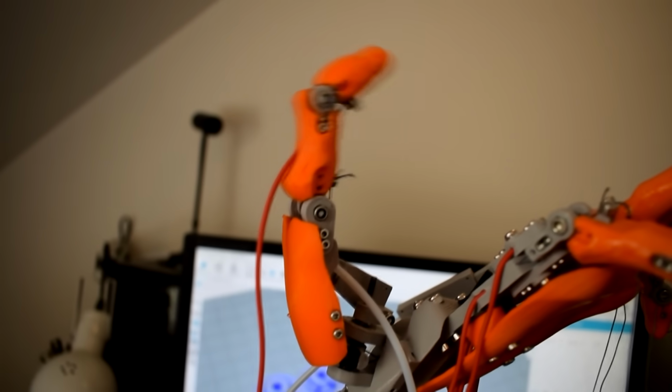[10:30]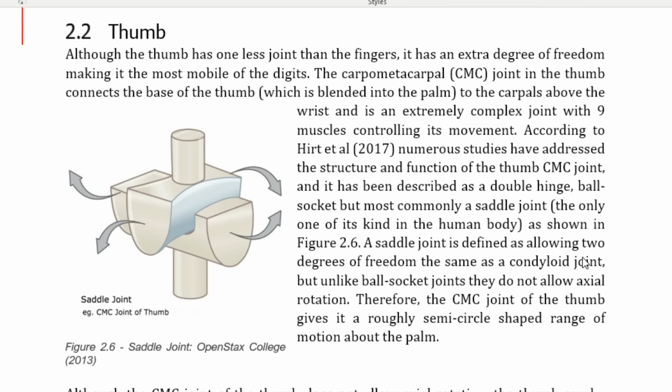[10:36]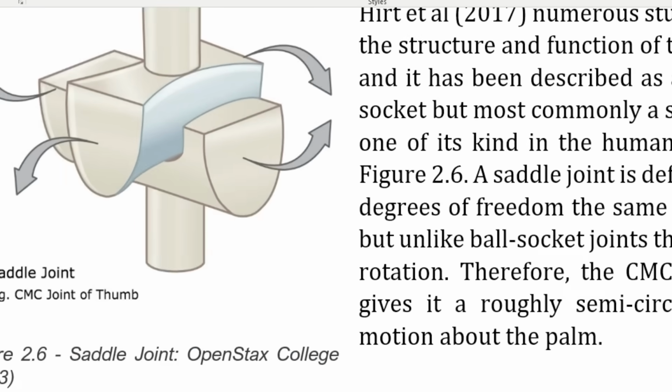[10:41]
So most of the joints in the thumb work exactly the same as the hinge joints that I talked about earlier, except just a little bit larger, apart from the base of the thumb. Now, the base of the thumb is a saddle joint. It's the only one of its kind in the human body, although when I was looking through the literature, it seems like a lot of people disagree about how to classify what this joint is at the base of the thumb. But it's a really complex joint, like a concave surface interacting with a convex surface, and it allows the thumb to move through some quite complex ranges of motion.
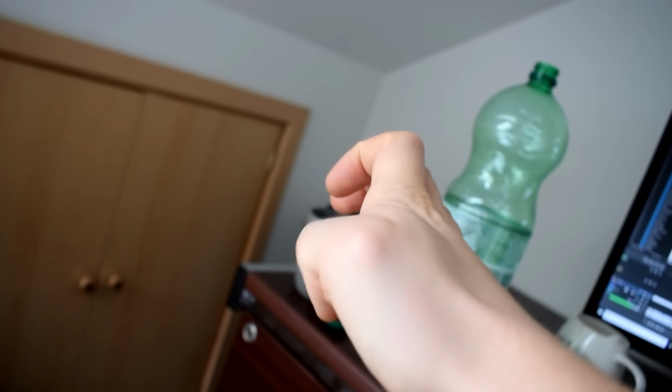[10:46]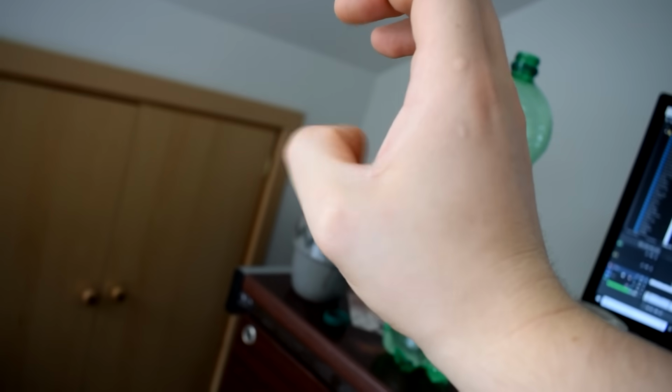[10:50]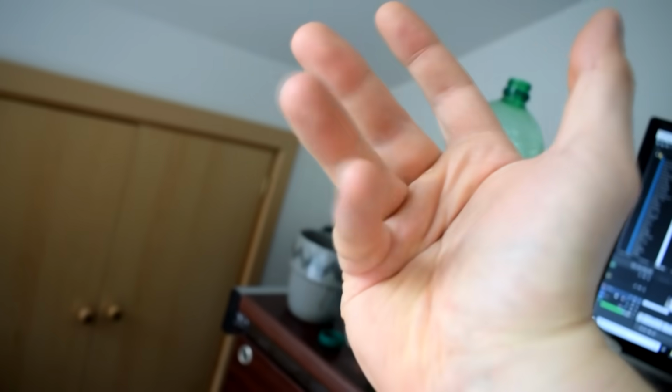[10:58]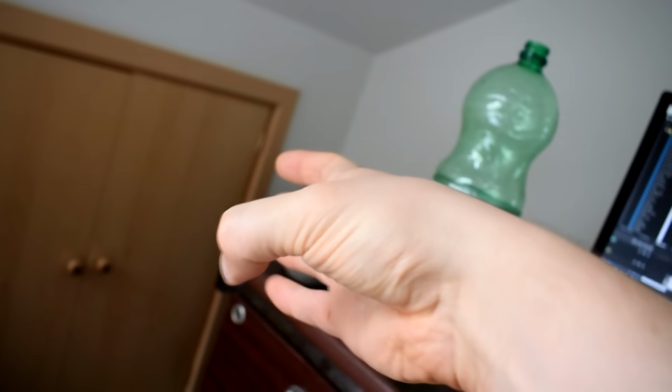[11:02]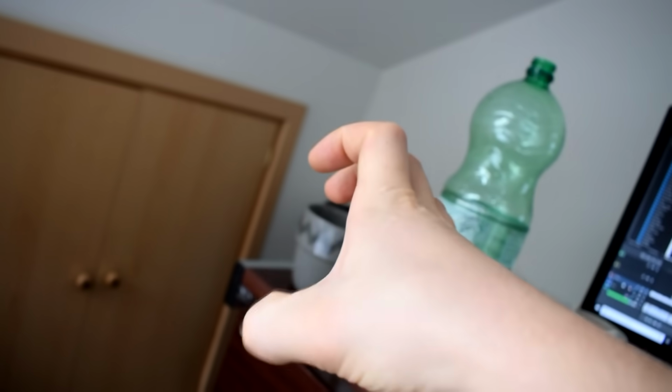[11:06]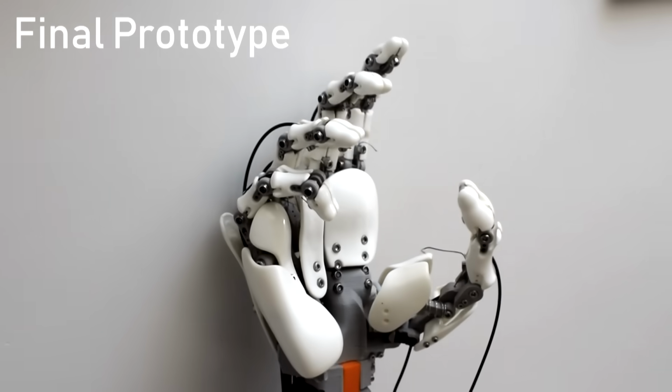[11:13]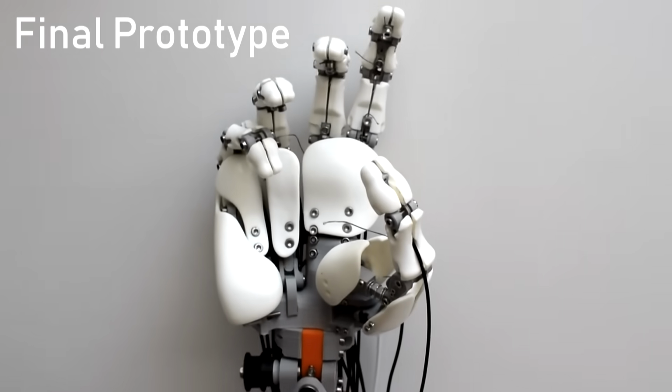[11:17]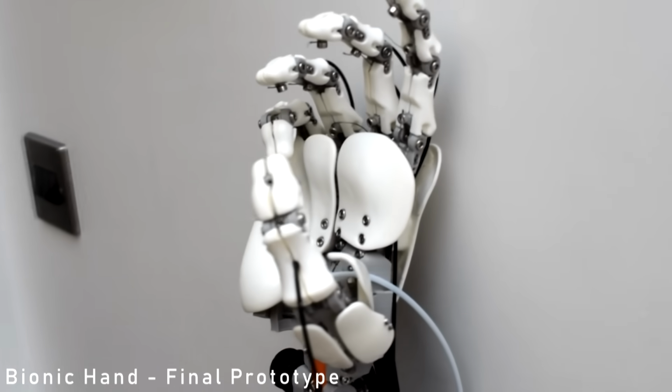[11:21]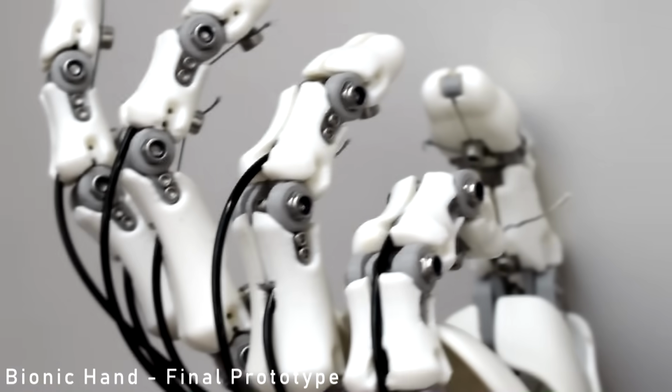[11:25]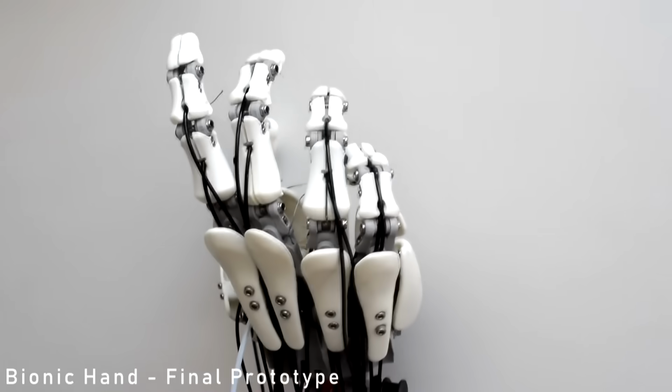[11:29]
So if you look at your thumb, you'll see there's two segments of the thumb that are sort of protruding from the palm, and then there's another bone that's sort of built into the palm, and it's surrounded by muscle. As I did mention a little bit in the previous video when I was talking about the control glove, all that muscle around the bottom bone of the thumb makes it quite difficult to measure how it moves. But I believe there's something ridiculous like 8 muscles in the thumb. There's ones that connect to the carpal bones in the base of the hand, and then I believe the metacarpal bones of the index finger on both sides by the looks of it.
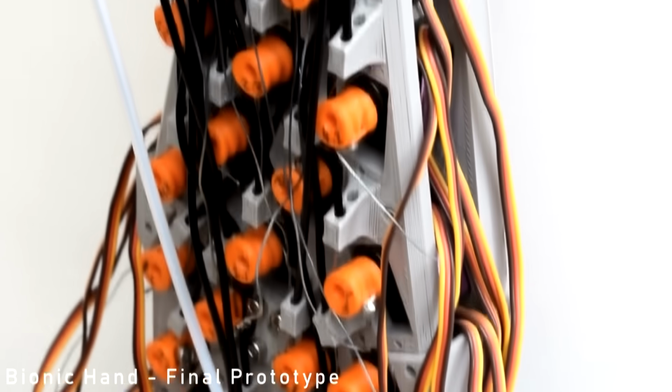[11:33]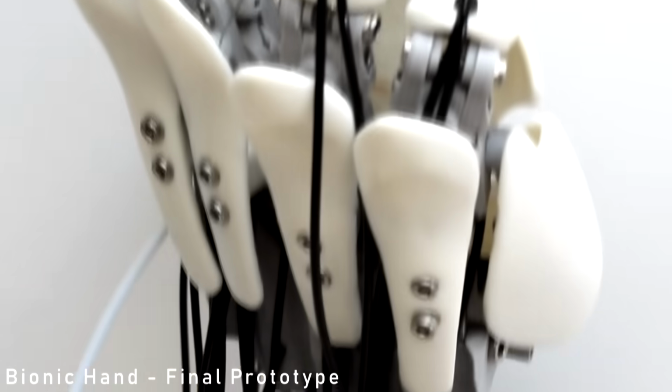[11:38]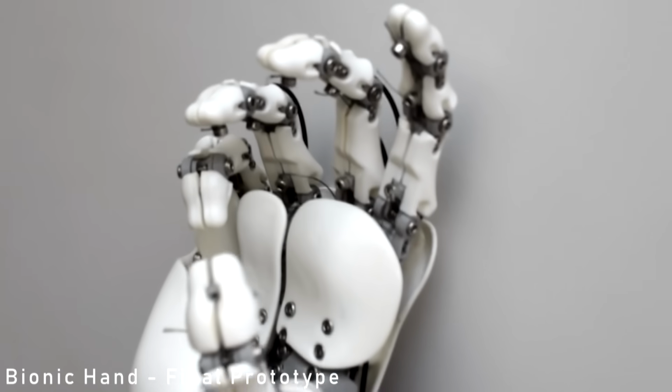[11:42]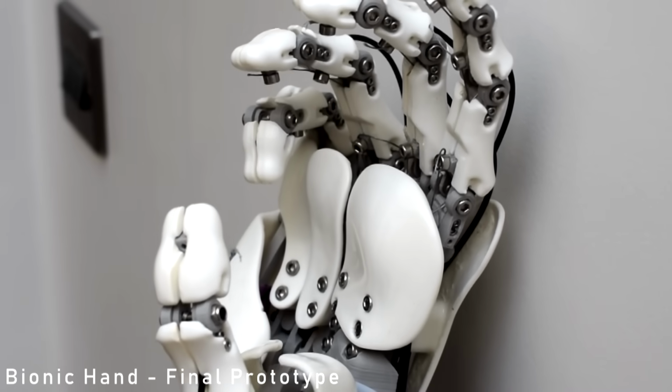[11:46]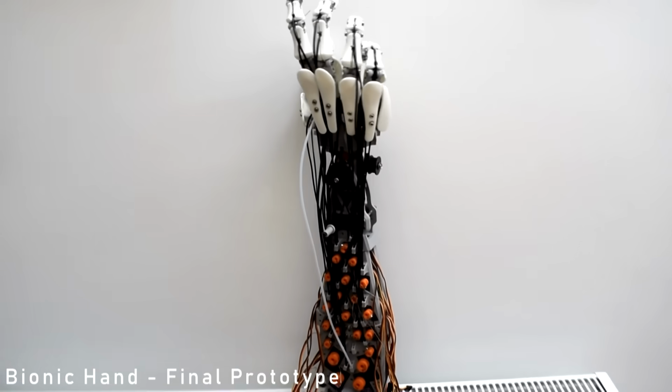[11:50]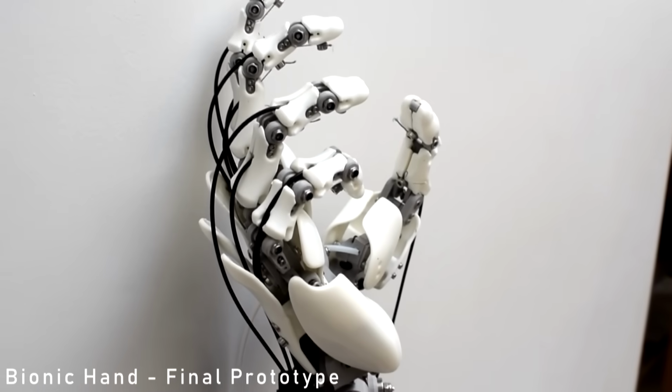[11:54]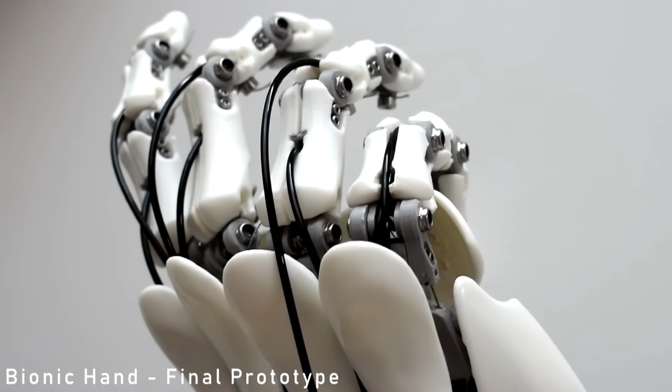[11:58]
Basically, it was way too complicated to try and directly emulate. I couldn't just have a cable for each one of the muscles, because I think that'd just be ridiculous and I'd have way too many actuators. So I tried to approximate the movement of the thumb as best I could at that joint, and I ended up having 2 axes of motion. I could have put another on, but when I did the grip type testing for the hand, I found that it was more or less all I needed.
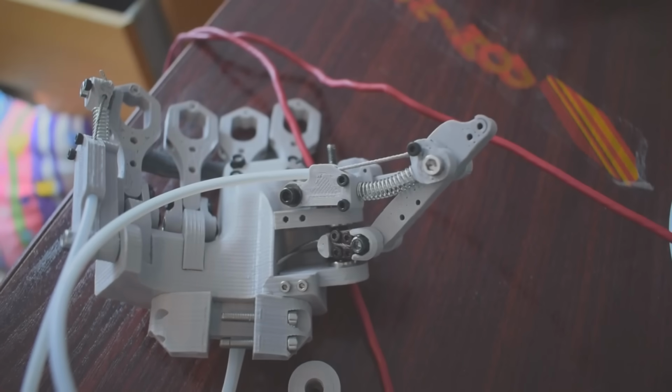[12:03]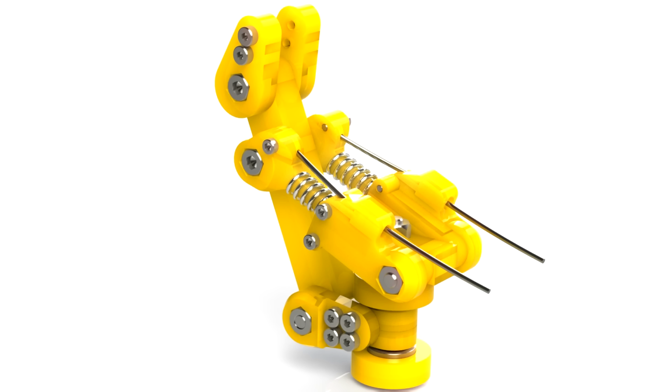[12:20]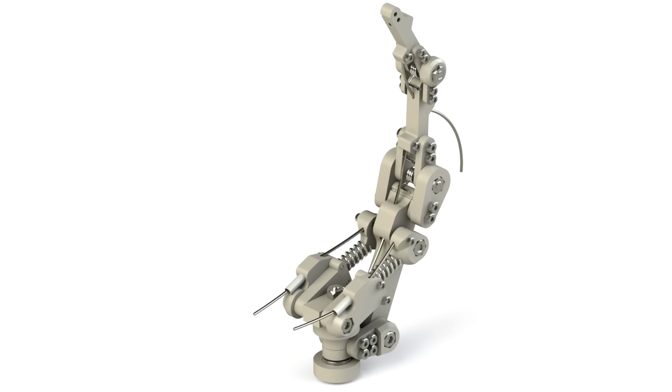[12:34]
So yeah, having one axis of motion being the swing around the fingers, from all the way opposing most of the fingers to swinging back and facing the same direction as the fingers. This uses a little assembly with two little bearings, deep groove bearings, that allows it to swing round so they can have a little bit of force through their axes of rotation, and then a little spring piston assembly to bring the thumb in towards the fingers.
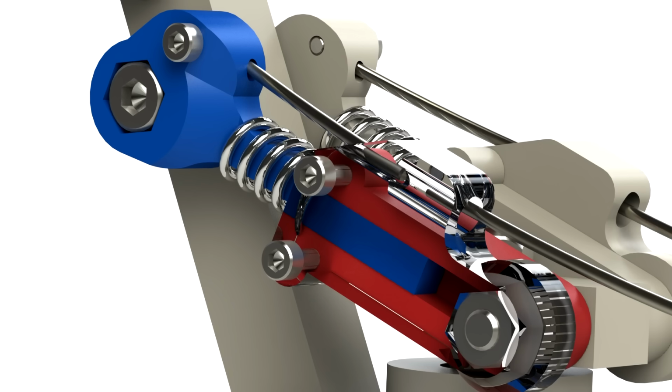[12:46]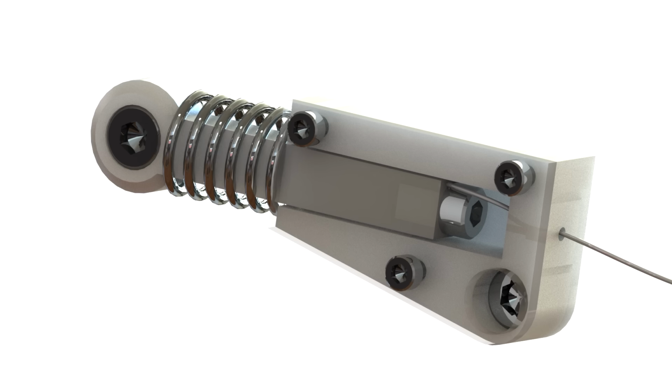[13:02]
That piston is a little bit jammy, really. Not too pleased with it. It's the kind of thing that probably shouldn't be 3D printed. I could make it on a lathe or just buy something that'd do that task, but it does kind of work. At least it's a proof of concept, but it also presents some problems about the management of the cables through it.
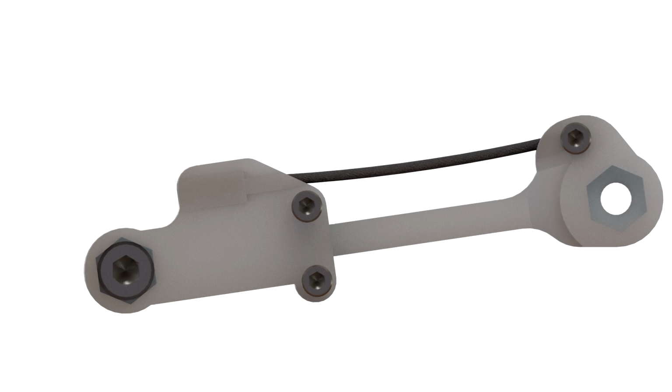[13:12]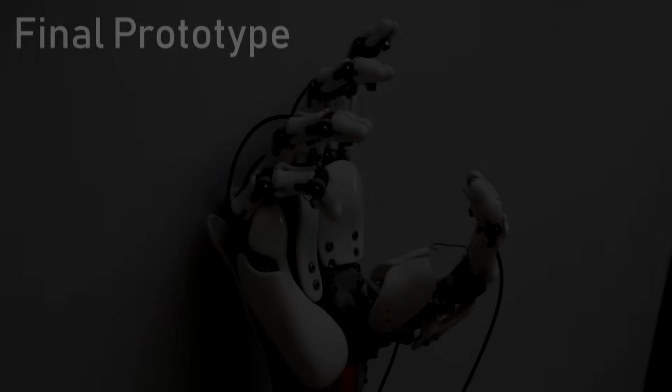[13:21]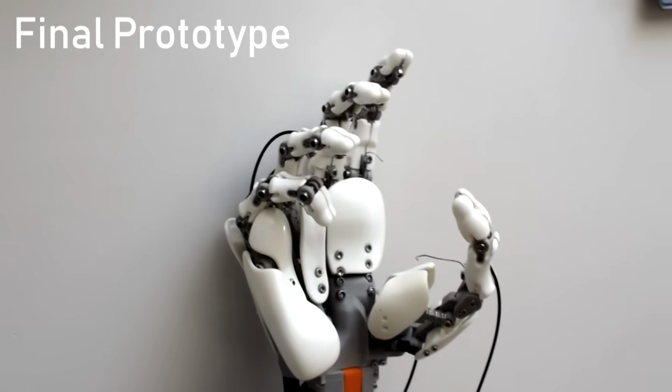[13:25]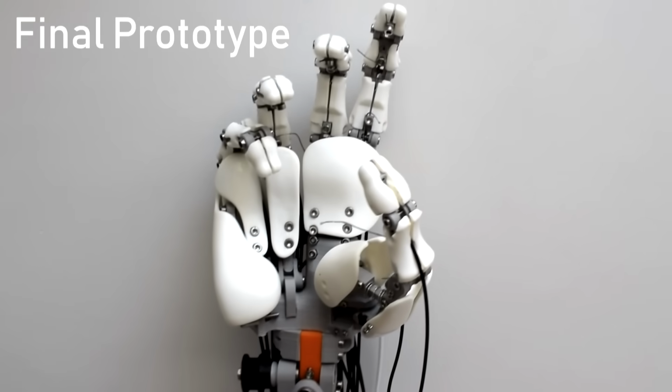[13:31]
So probably more development, more focus is needed at the base of the thumb to try and emulate that joint better, because it is just so complex, but it's also so critical. It's just so important to have the thumb working properly. Without the opposing thumb, we wouldn't be able to do anything with the hand, really. And at the same time, you're also limited by how much you can measure it with the control glove. So the base of the thumb is definitely a challenge and something that still needs work.
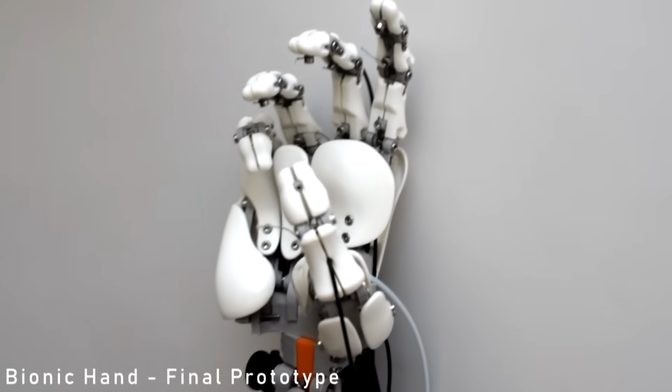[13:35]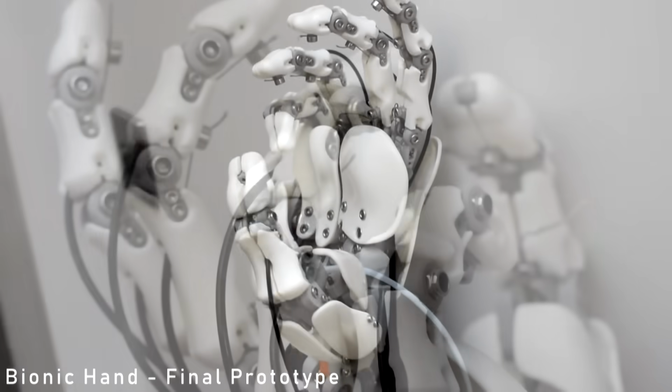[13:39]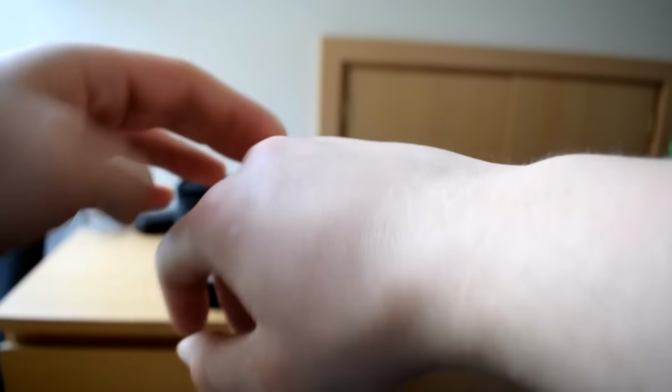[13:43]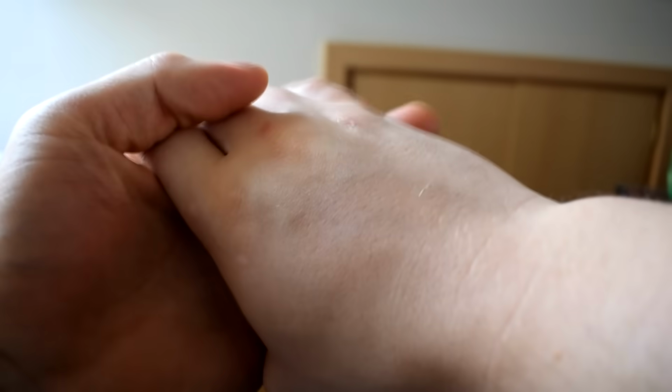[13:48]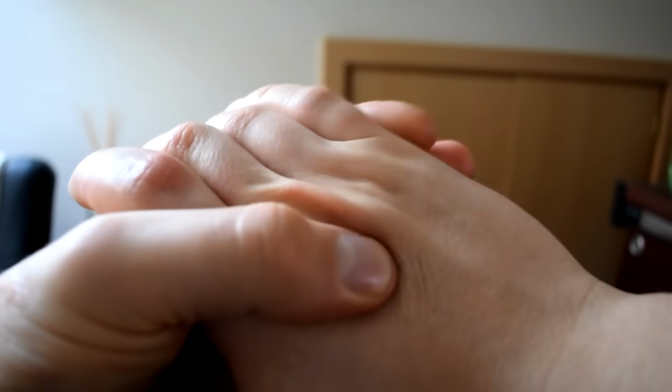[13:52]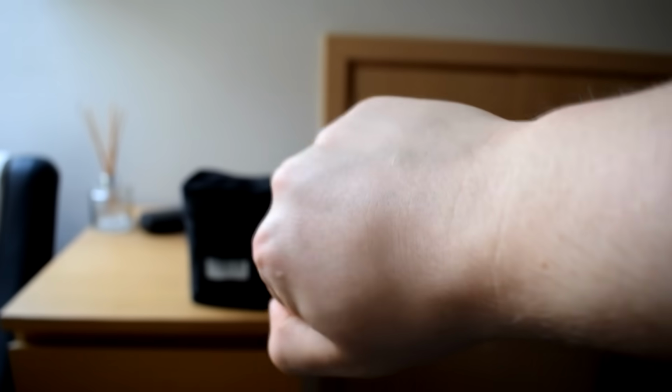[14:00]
So here's another weird range of motion that I wanted it to have. The metacarpal bones are slightly flexible, and you'll notice that if you play around with your palm, you can move your little and ring finger metacarpal bones by squeezing the muscles below your little finger in your palm.
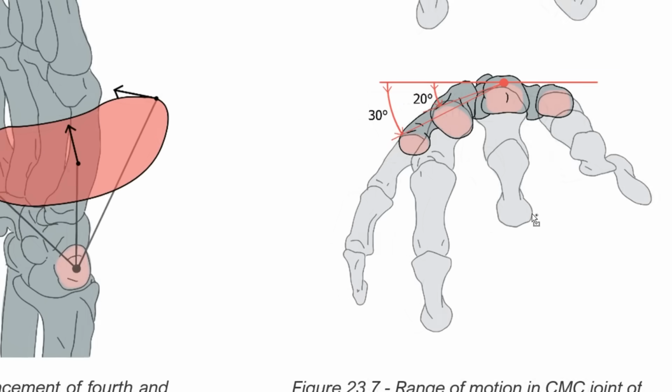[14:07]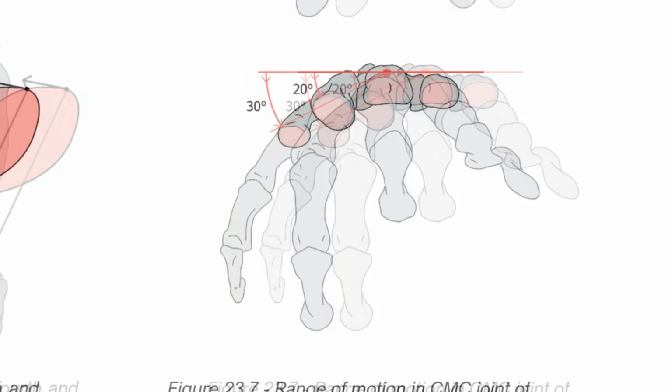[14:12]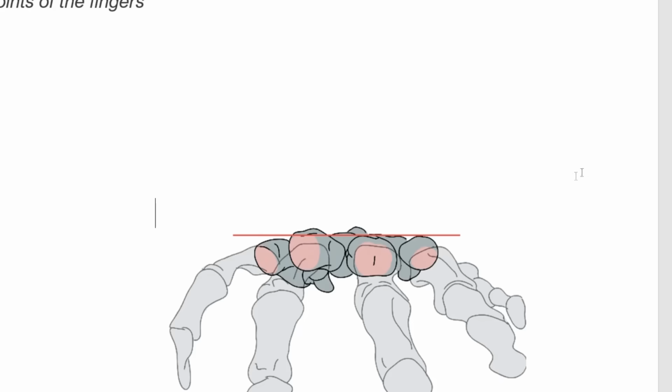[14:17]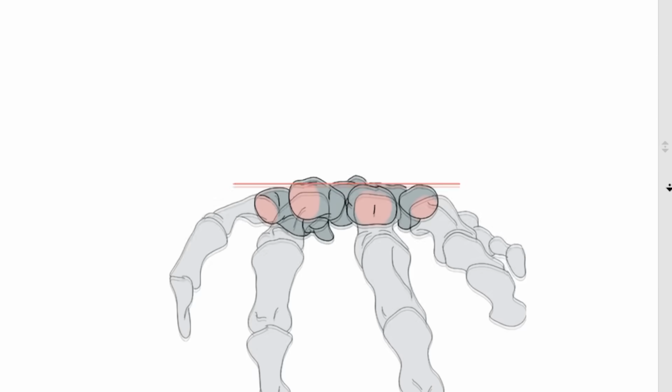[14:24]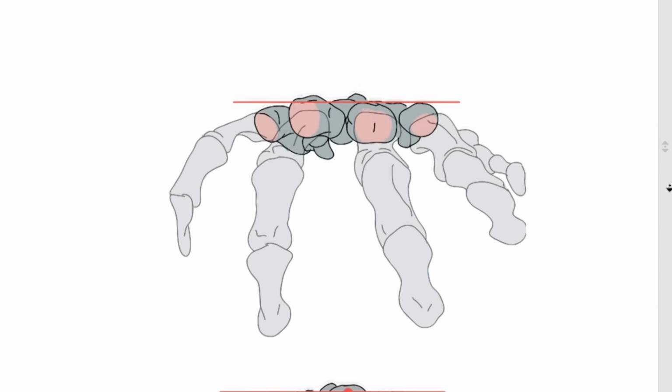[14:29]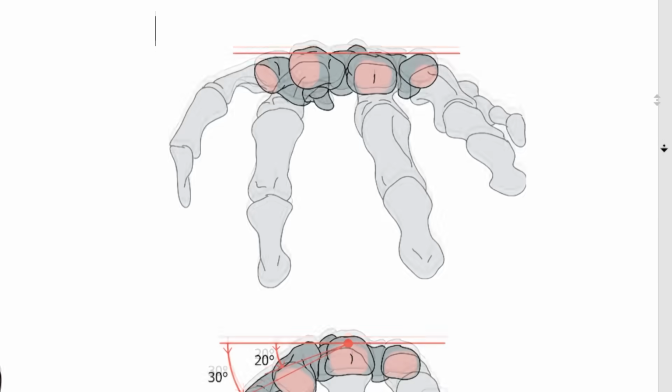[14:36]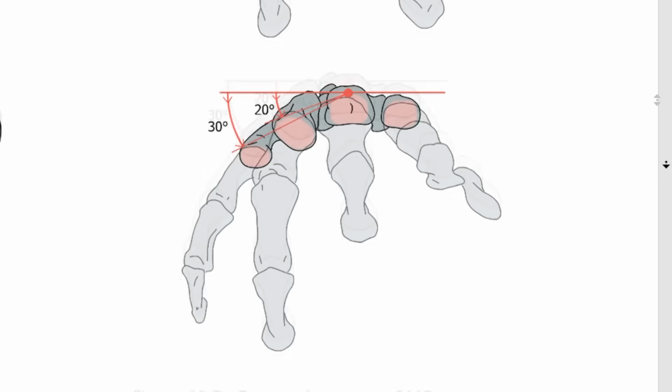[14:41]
So this was another thing that I thought would be important. I wasn't able to find much research into that specific degree of freedom, but I feel like it is quite important, even though it's something that you don't really pick up on. Whenever you go and grasp something, your knuckles move downward, and depending on what you're picking up, I feel like that might be quite an important range of motion. But that is something that I'm a little bit unclear of. It just seemed to be quite a poorly researched and poorly understood thing to happen, and it might just be something that's locked to other movements.
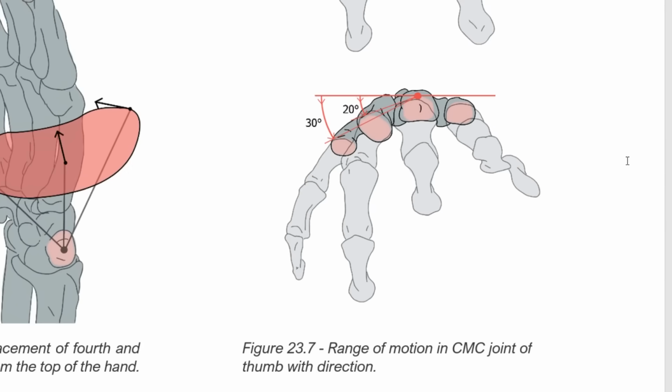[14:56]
It might not be something that you can really control individually, but I wanted to put it in anyway because my intention was to cram in as many degrees of freedom and degrees of actuation as possible, so it could be as organic looking and moving as possible.
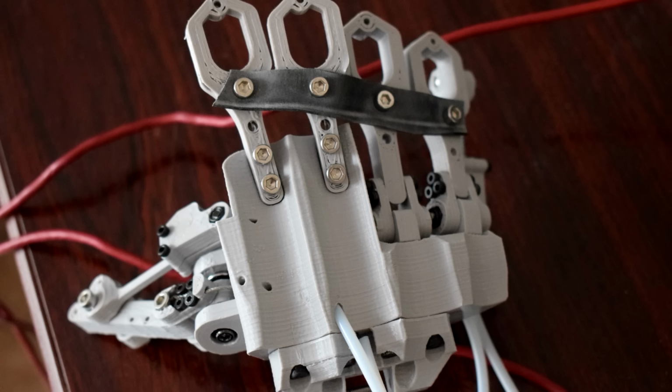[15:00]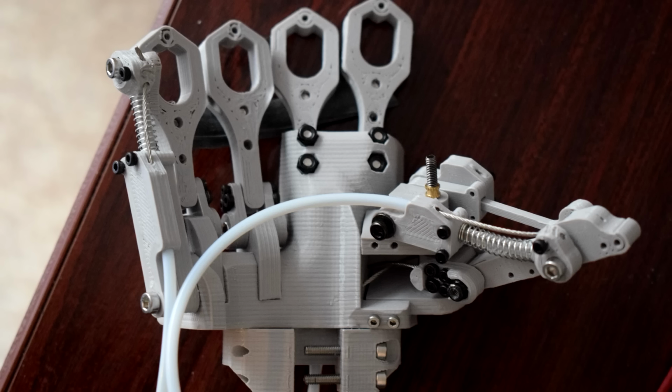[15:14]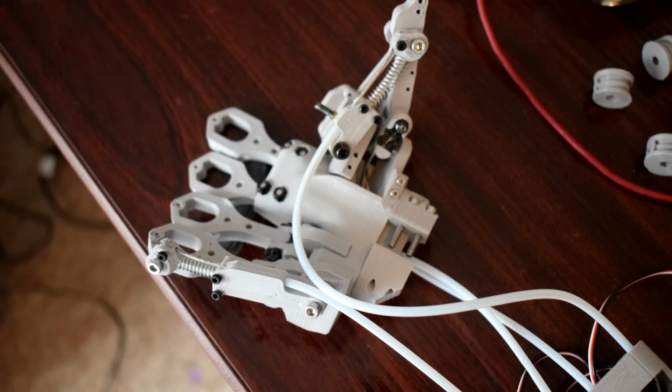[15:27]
So this is the one thing that just didn't really work, because I'd used a little bit of inner tube going across the knuckles to be the elastic thing that would return it back to a neutral position. The inner tube wasn't really good enough for bringing it back, and it just made it more difficult to actuate. Something that more directly opposes being bent, like a little strip of spring steel, would have been a lot better in place of that inner tube.
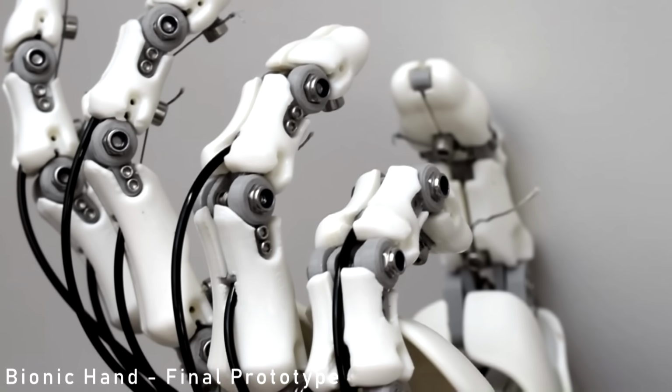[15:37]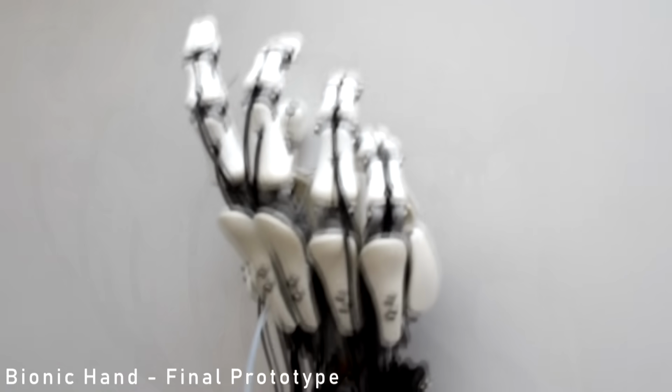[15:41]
This is something that I'm just not sure if it's necessary at all. I don't know if it adds anything really to the hand. It's something that I'd be tempted to just completely take away, because it adds so much instability to the structure of the hand, and there's no benefit to it being there.
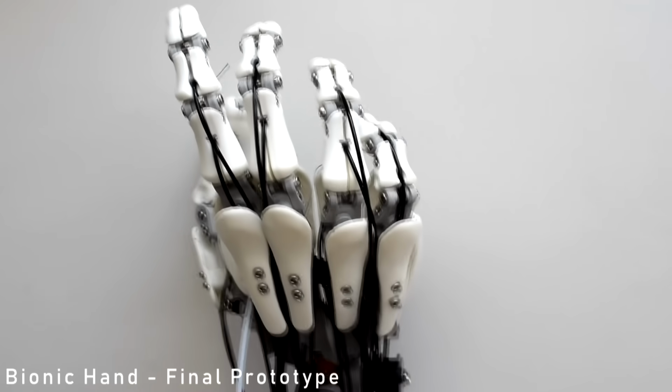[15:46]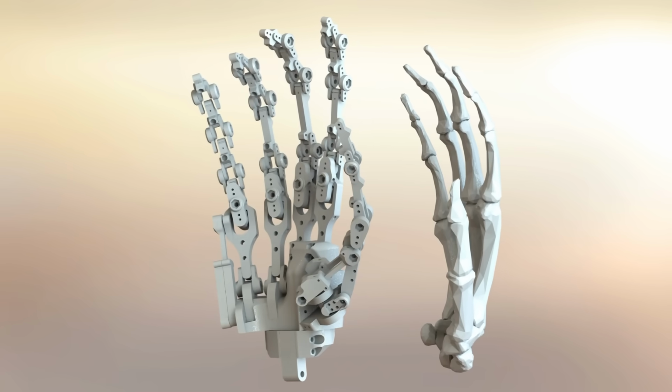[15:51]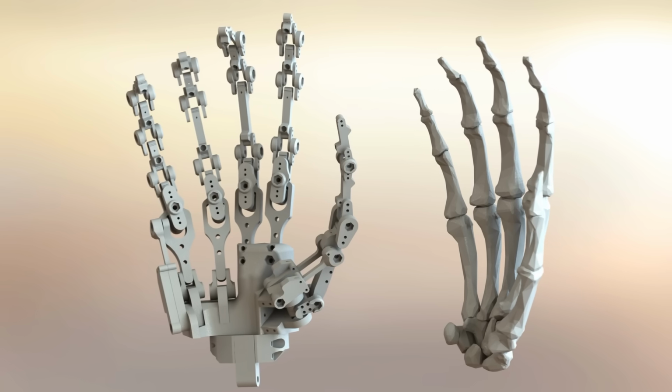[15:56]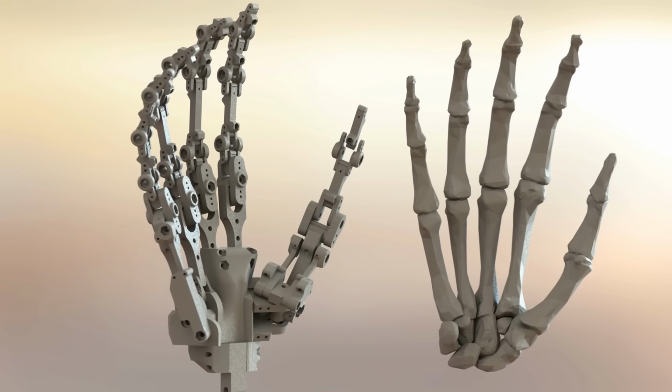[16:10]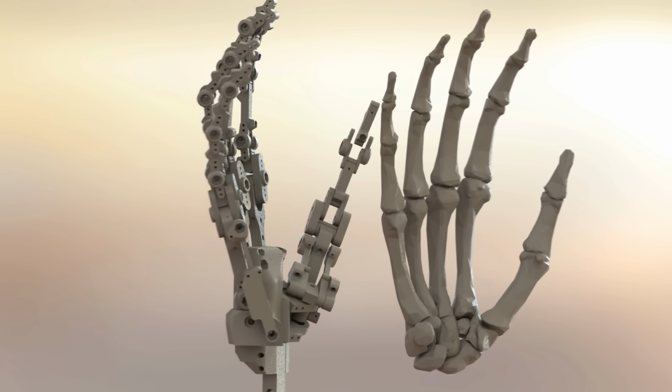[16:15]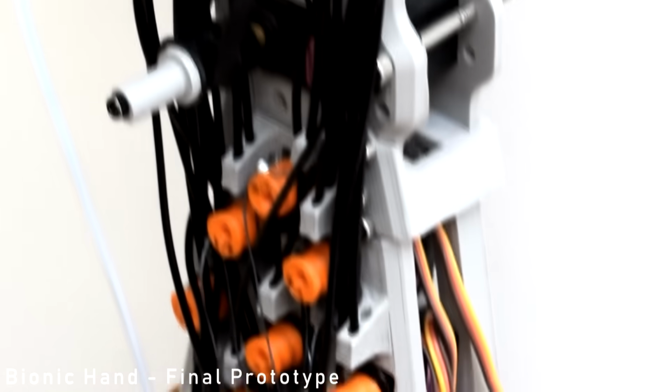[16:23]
It was just because, as I said at the beginning, the idea is to design a hand that's as close to a real hand as possible, with no regard really for how easy it would be to control. The pitch was that in the future, when there's no restrictions on how we can control bionic hands, like myoelectric technology detecting nerve impulses in the residual limb, say we could detect everything in super fine detail, what kind of amazingly complex hands would we use rather than the limited ones that we have now?
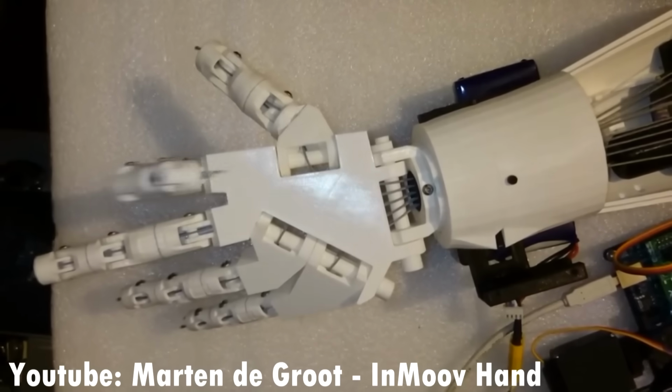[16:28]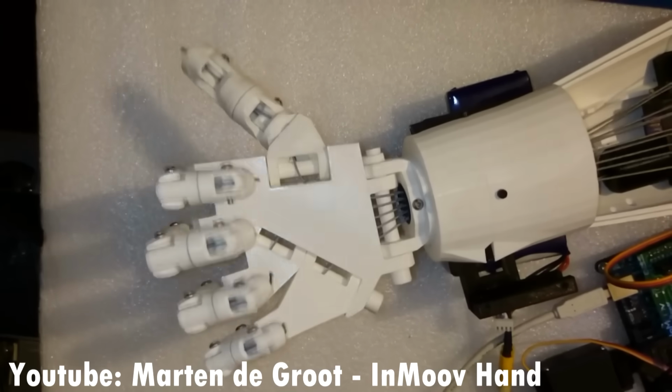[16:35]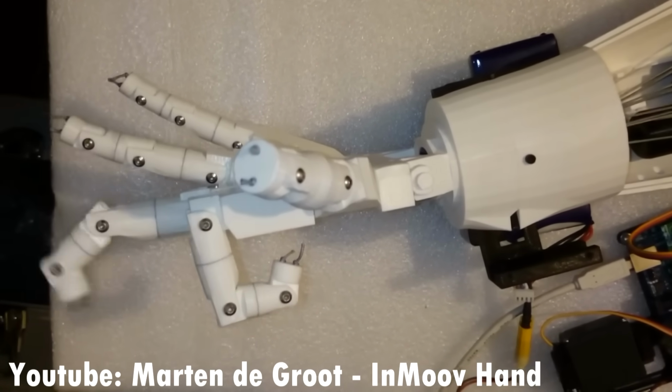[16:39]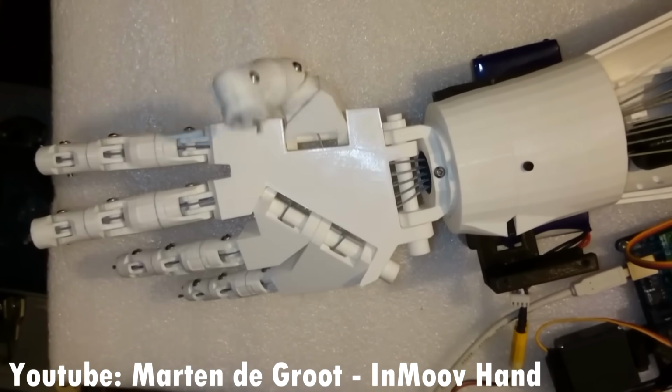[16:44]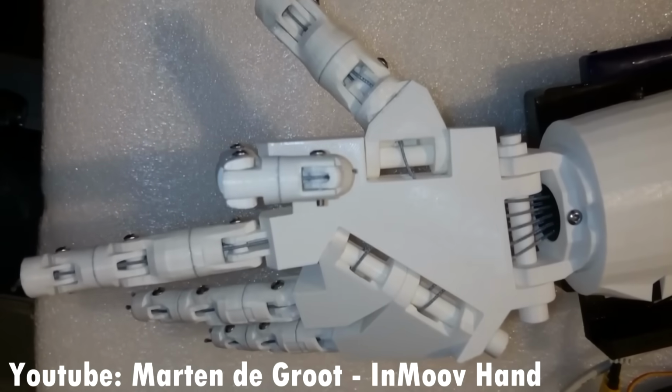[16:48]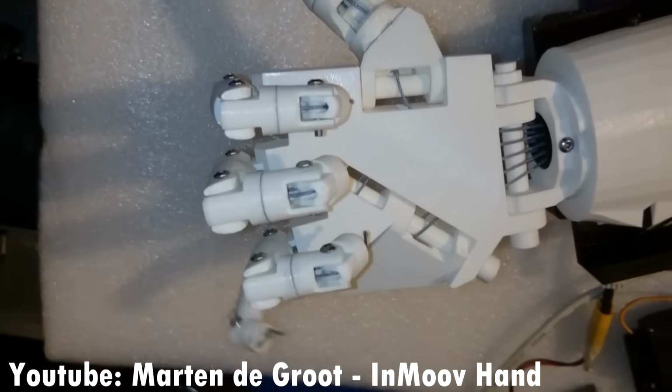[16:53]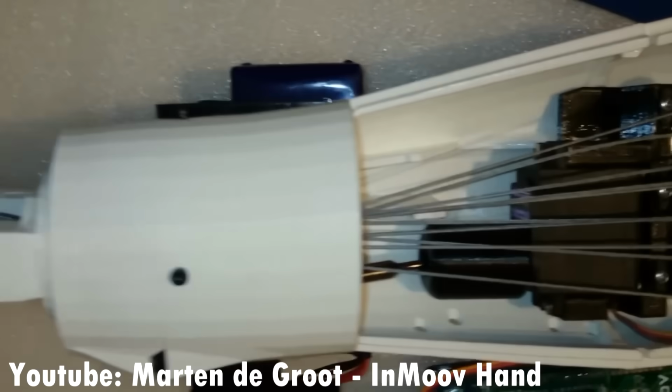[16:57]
But yeah, that's something that I could probably just get rid of, honestly. I have seen bionic hand designs that integrate one or two hinges in the palm, which combines the motion of moving the metacarpal bone with the inwards twisting that I was describing earlier, and it does allow the little finger to oppose the thumb more directly. It's something that I need to research in more detail.
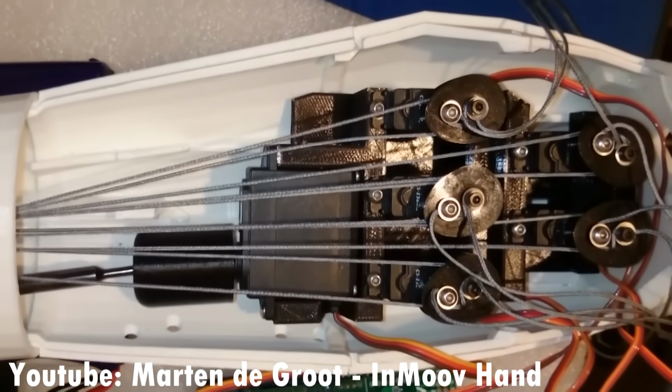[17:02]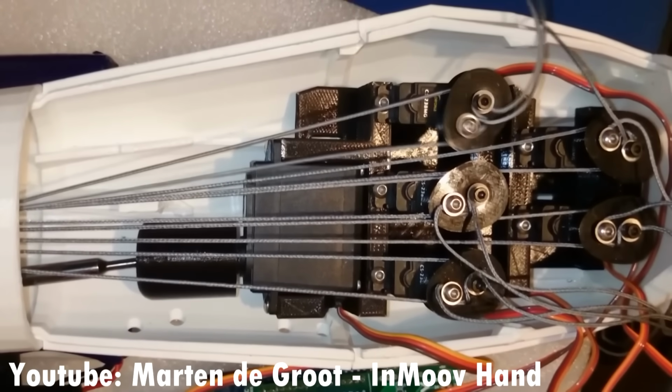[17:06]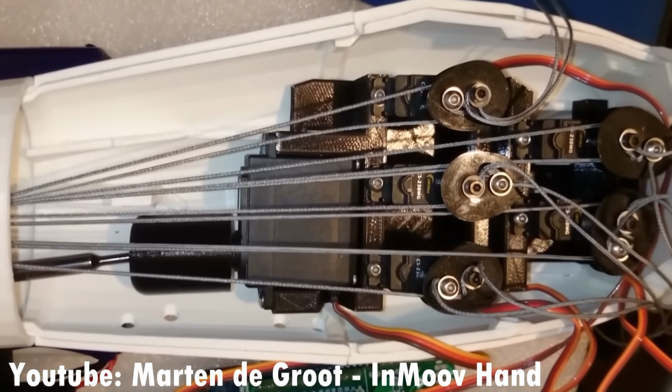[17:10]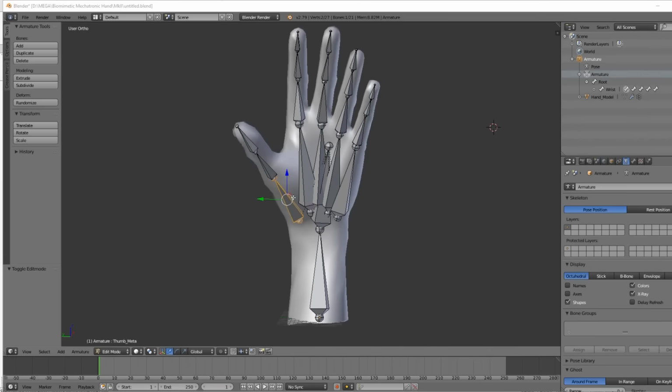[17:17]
Maybe I was in too much of a rush to start designing, and I neglected certain joints, even though I did produce a wealth of research, and my thesis was marked very highly, in fact. But the hand is such an enormously complicated biological mechanism that there's just so much you could look into, and trying to emulate every single joint is just a really complicated process.
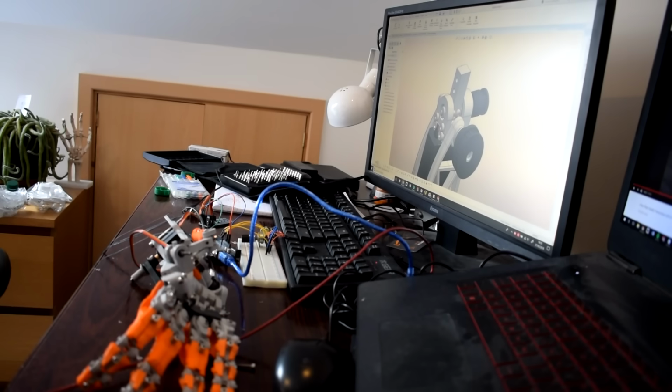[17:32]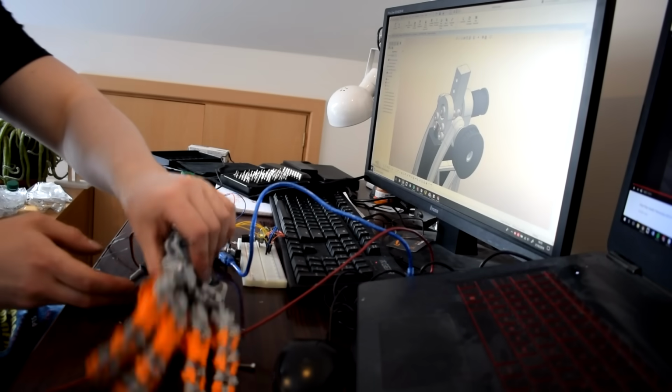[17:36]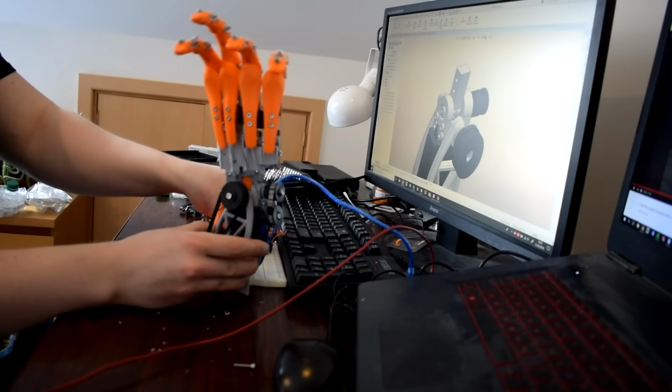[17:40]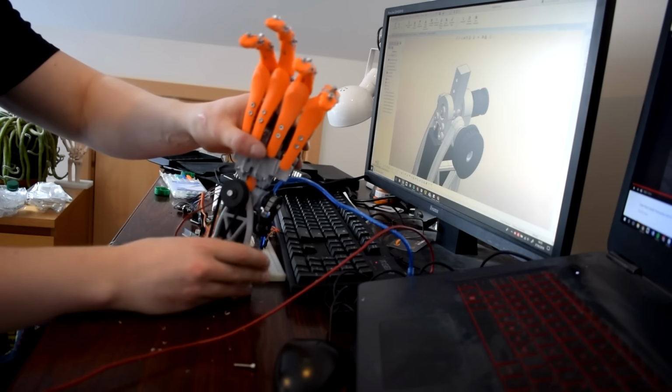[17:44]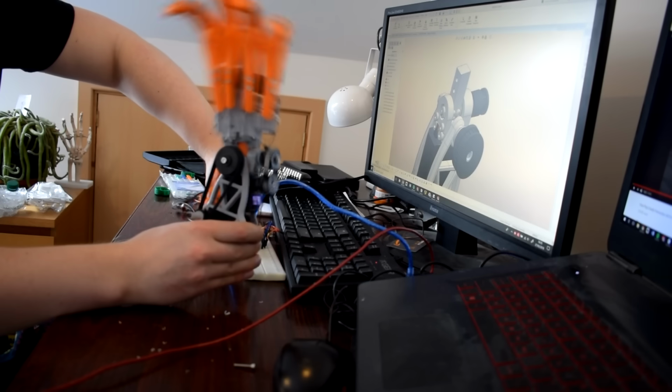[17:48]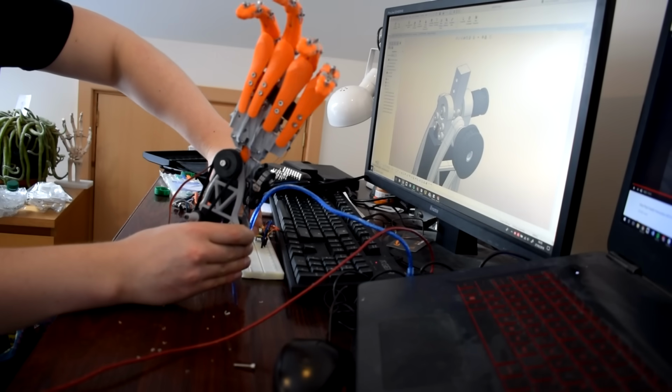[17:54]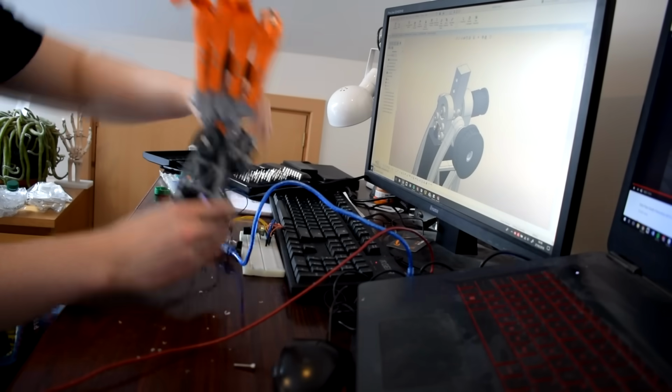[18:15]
So then there's the wrist. The wrist was kind of challenging because I wanted to make it as small as possible. The wrist in our hands, I'm just talking about the flexion and the left to right. I'm not talking about turning your palm over as of yet. But that motion in our hand is just controlled by muscles in the forearm, just like the fingers. I didn't really have any more space in the forearm because all of the forearm was taken up with the actuators for the fingers. So I ended up integrating servo motors into the wrist right where it bends, and then using timing belts and pulleys to try and get a little bit more torque out of the motors, and obviously transfer the force across.
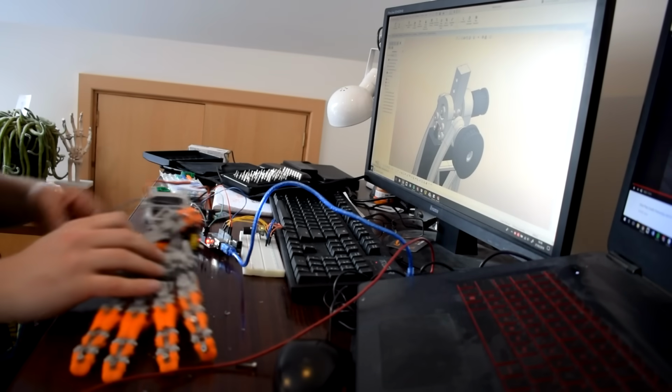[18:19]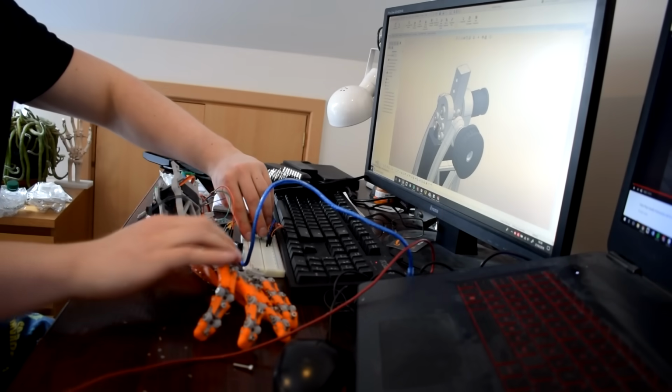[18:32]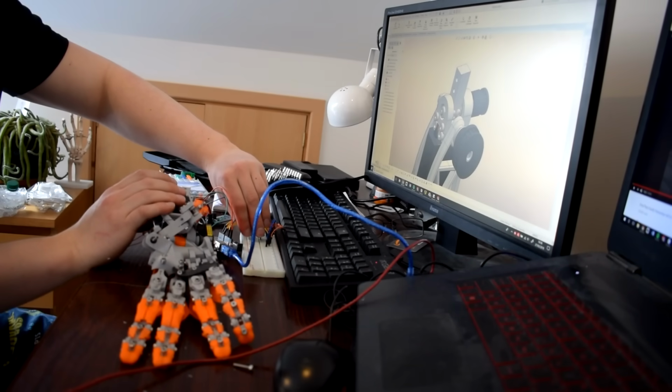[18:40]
I did have a little bit of trouble fitting these quite bulky motors into a small enough space, and ideally I'd like the wrist to be a little bit more streamlined, but it did seem to work okay, even if maybe the motors weren't quite as strong as they needed to be. But that's also a problem with the weight of the hand, which is a problem with the design overcompensating for the limitations, or my idea of the limitations, of 3D printing.
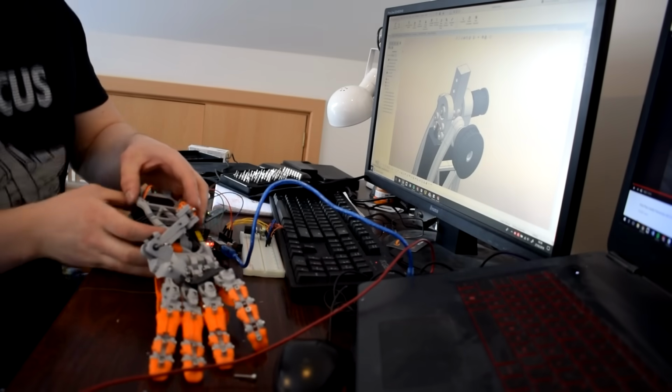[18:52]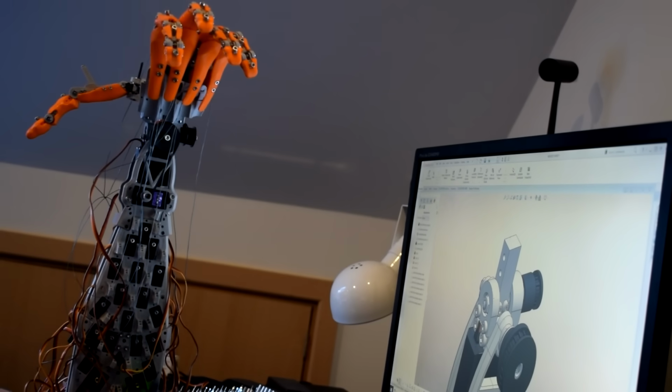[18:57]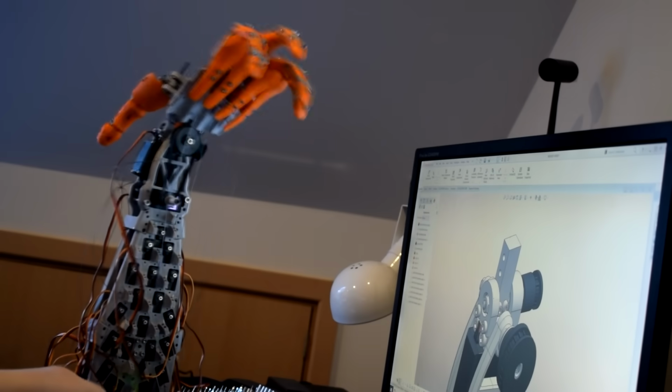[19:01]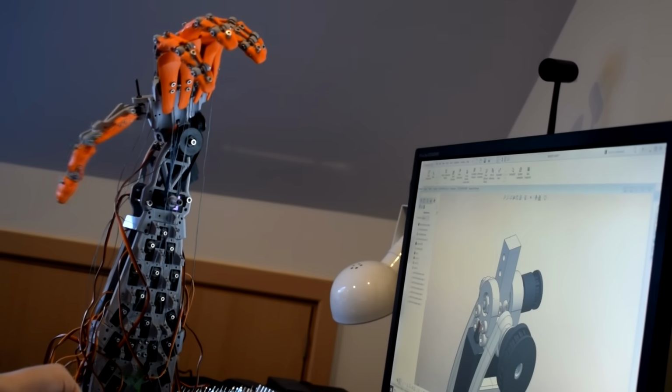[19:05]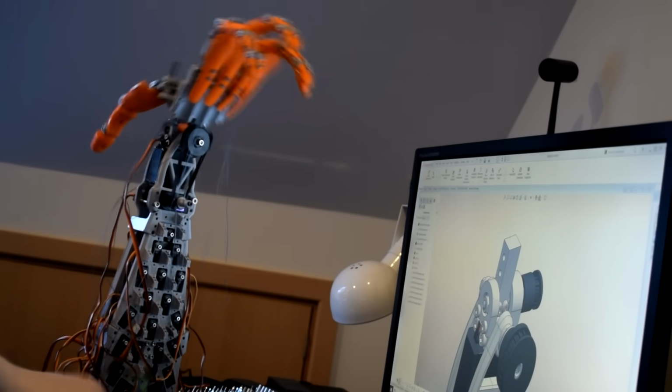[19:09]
So people are asking me how can it be fixed and how can you get it working, but realistically the problem's deep rooted, and it needs to just be started from scratch to be able to have it working perfectly, because it is just too heavy and there's like 1,000 little tweaks that need to be made. It's just one step in an iterative design and prototyping process. But yeah, the wrist doesn't work too bad.
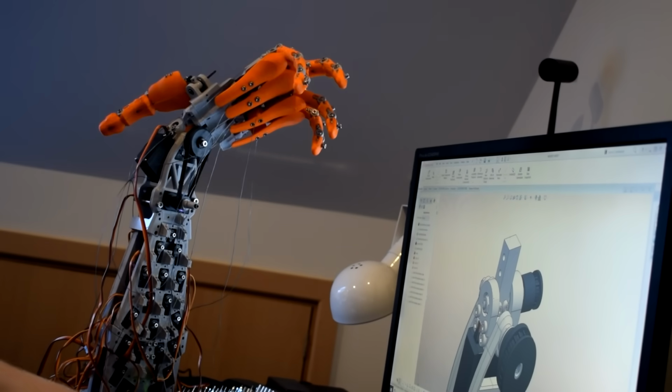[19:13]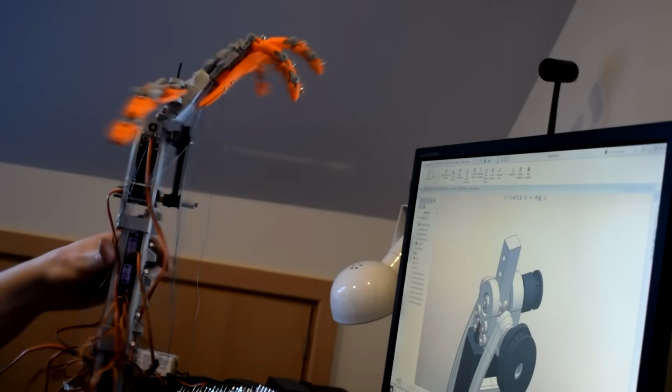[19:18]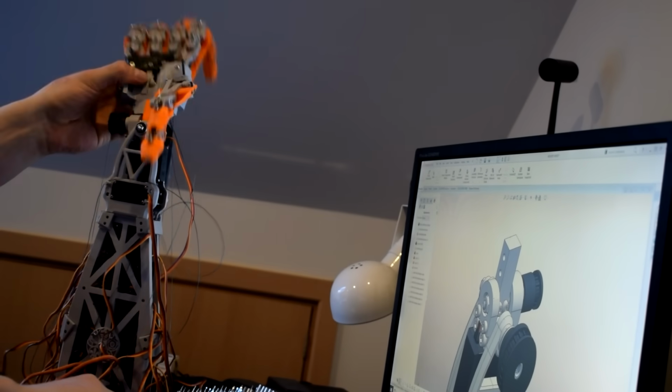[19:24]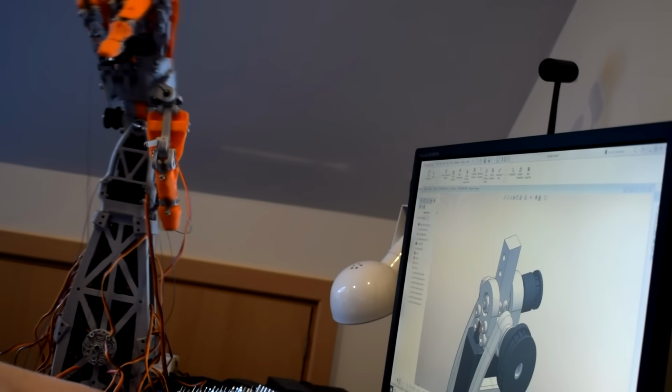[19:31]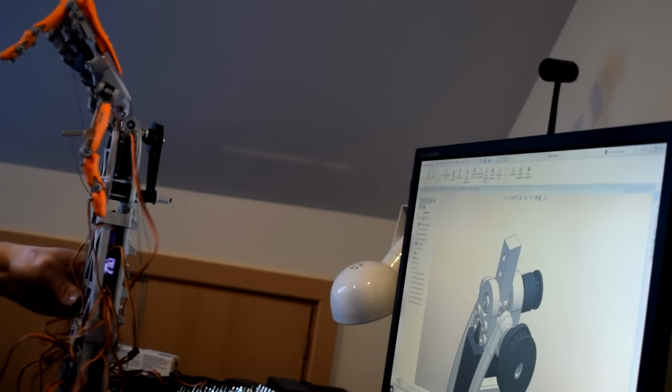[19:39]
Now the turning over of the palm, this is something I thought about for a while, because in a real hand you have two bones, a radius and an ulnar bone. Your ulnar bone forms most of the elbow joint, while the radius bone forms most of the wrist joint. So when you turn your palm over, the radius bone moves across the ulnar bone, which stays stationary. So effectively you turn your palm over while your elbow stays stationary. This is something that I just didn't have time to figure out.
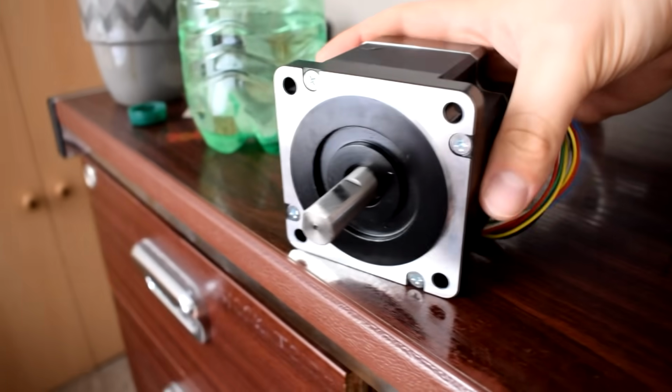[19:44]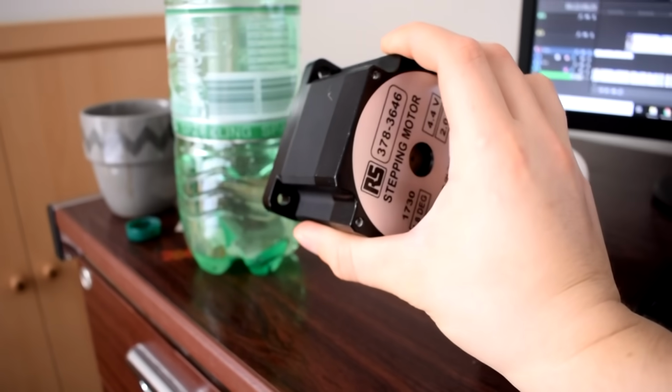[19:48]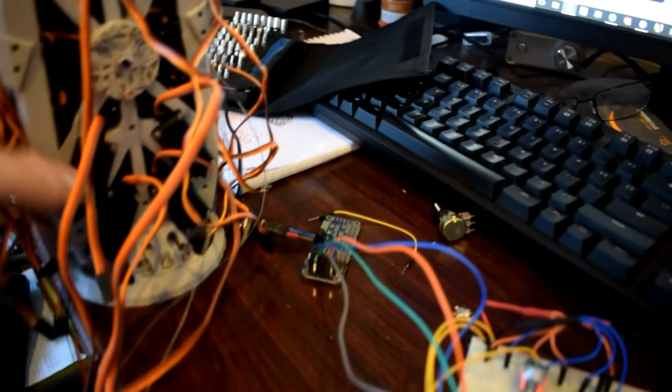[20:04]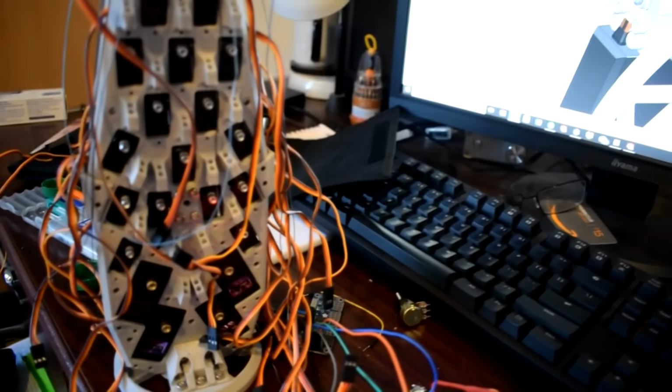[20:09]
I was looking at this great big massive stepper motor and trying to imagine how I could get it to turn the entire thing over, but in the end I just didn't have time to figure it out. I mean, obviously you could just have one motor twisting the entire arm through the centre, and that's what I was thinking of doing, but in the end I just wasn't happy with anything other than the radius turning over the ulnar assembly, because it wouldn't be biomimetic, and I wouldn't have been happy with it. But that's something that in the future I'd like to figure out.
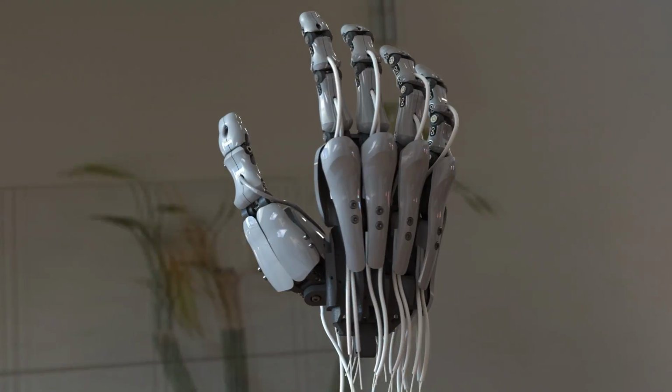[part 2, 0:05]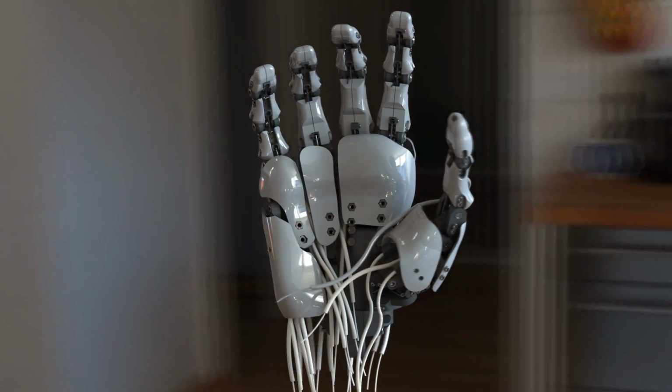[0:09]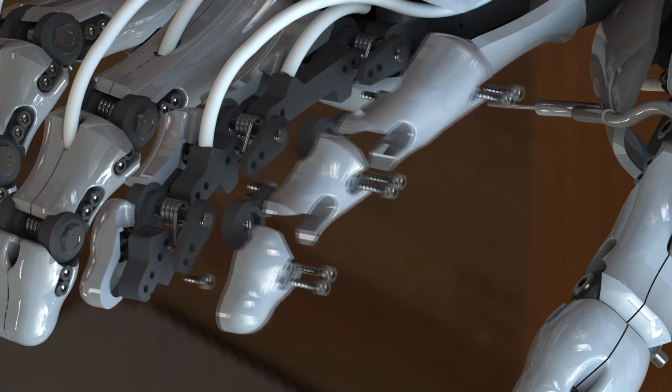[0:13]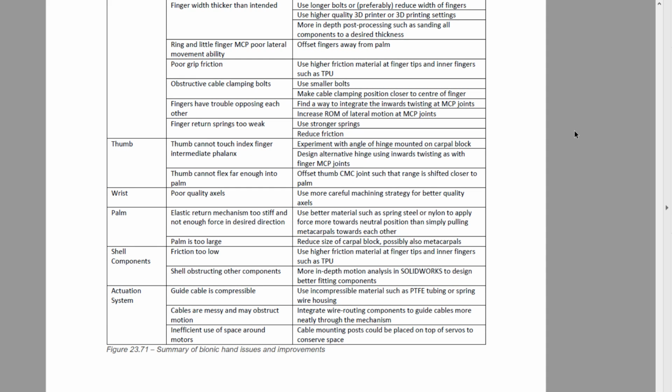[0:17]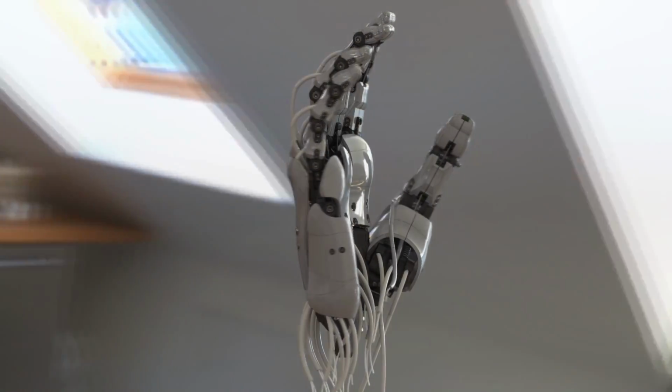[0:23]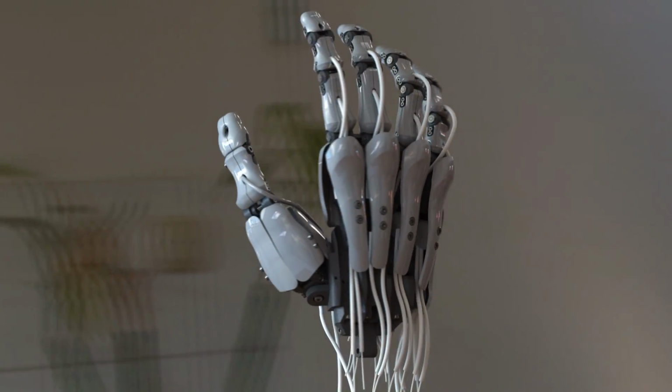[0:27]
Recently, I've decided to start working again on my biomimetic bionic hand. When I was working on it a few years ago, at the end of that project, I wrote down every optimization I could think of, and I've thought of lots more since. So my design process this time around is going to be to start from the ground up, but use the original design as a point of reference, and work through the design piece by piece and optimize every single part.
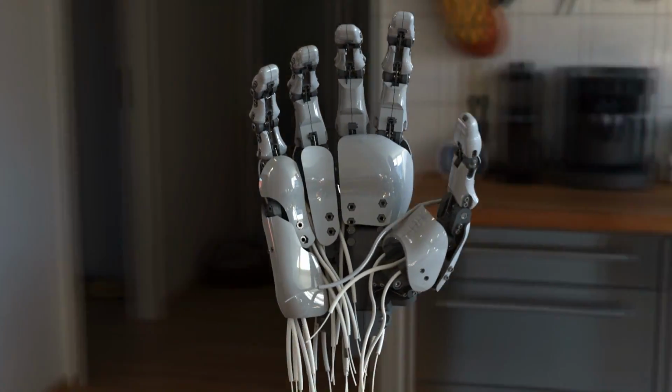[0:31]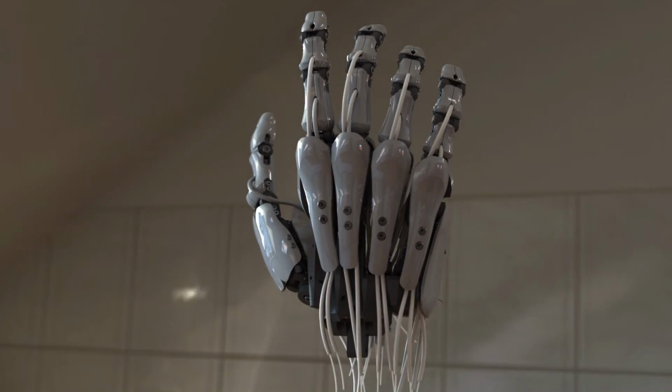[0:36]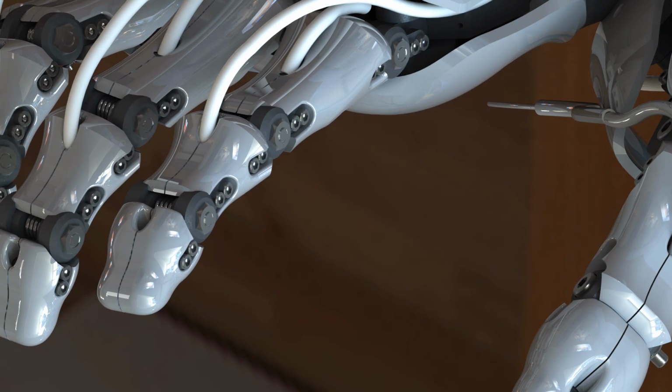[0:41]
Now I just want to mention quickly, I do get a lot of emails asking for the CAD and STL files for the original design, but because I did that project as part of my degree, the university owns those files and I'm not able to distribute them.
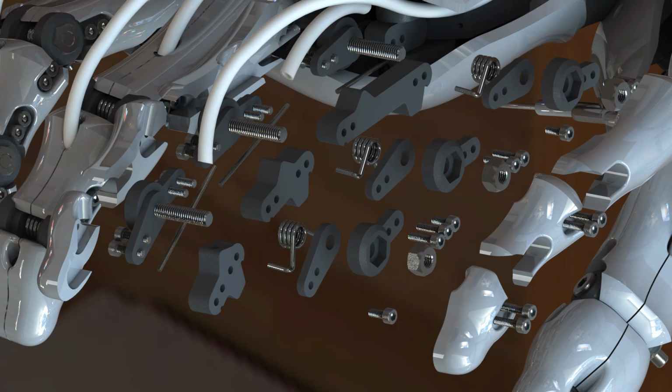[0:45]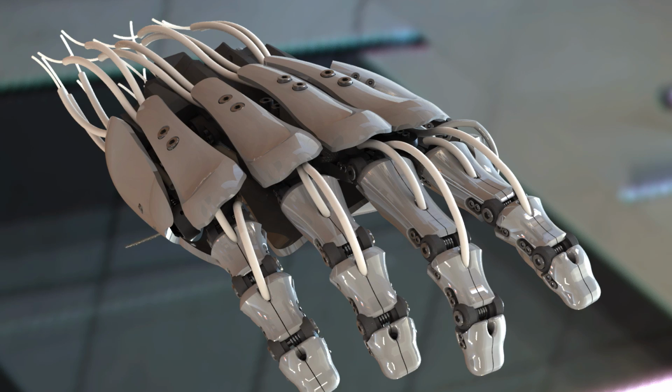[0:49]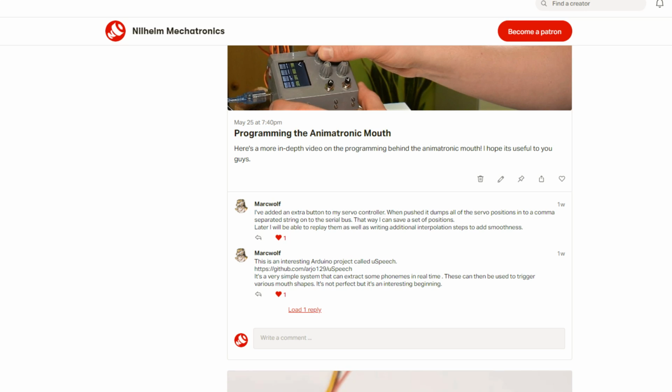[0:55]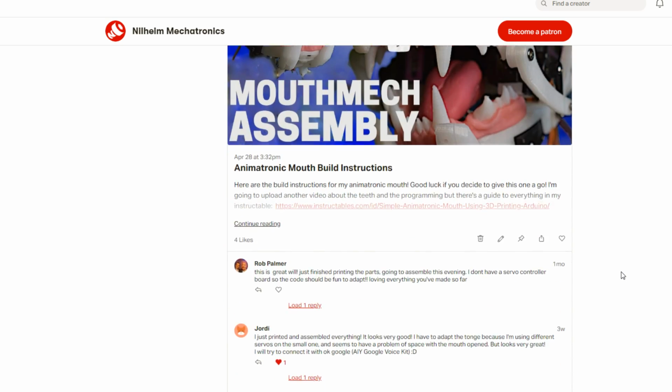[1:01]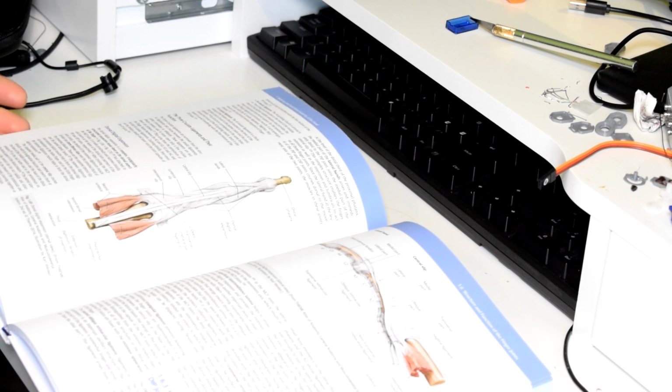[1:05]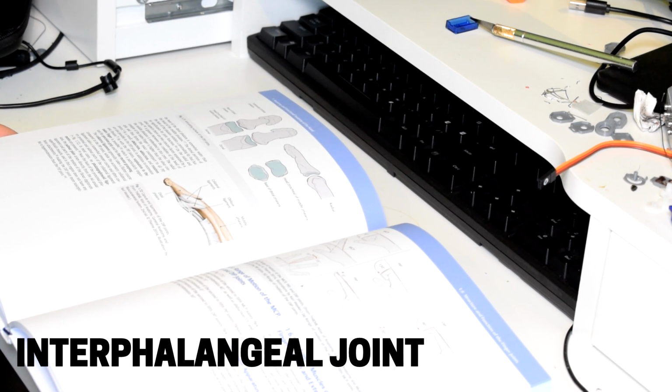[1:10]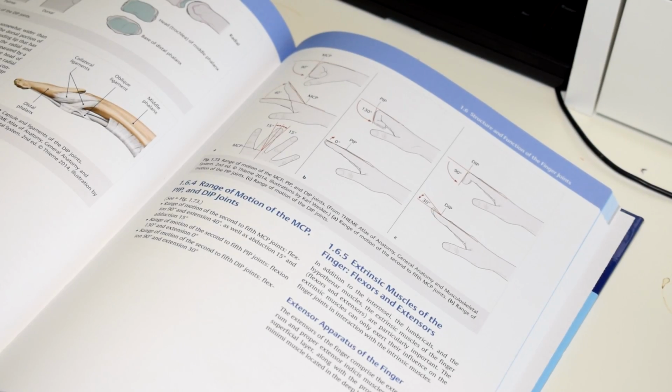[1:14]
So as a starting point, I've been working on a new IP joint design, so that means interphalangeal, because the individual finger segments are called phalanges. In theory, this is the simplest joint design in the human hand, it being a simple hinge joint.
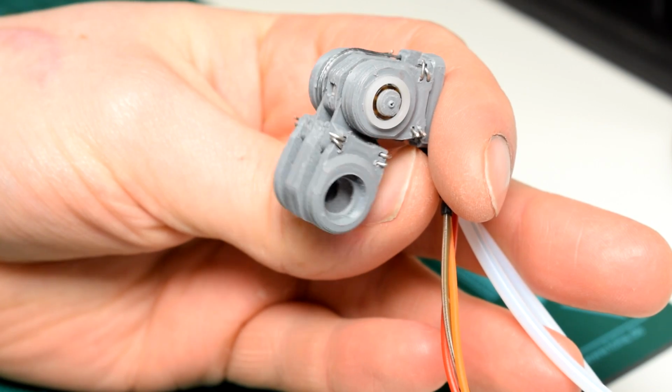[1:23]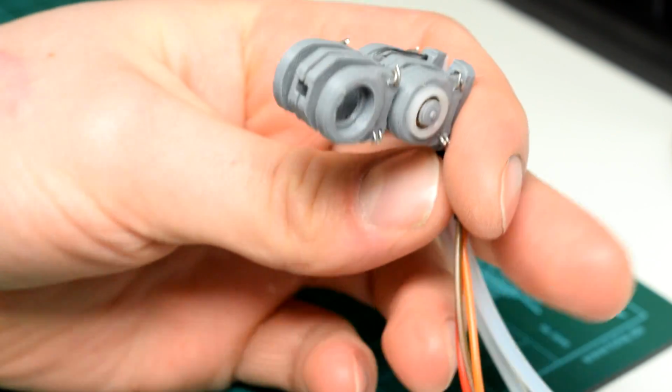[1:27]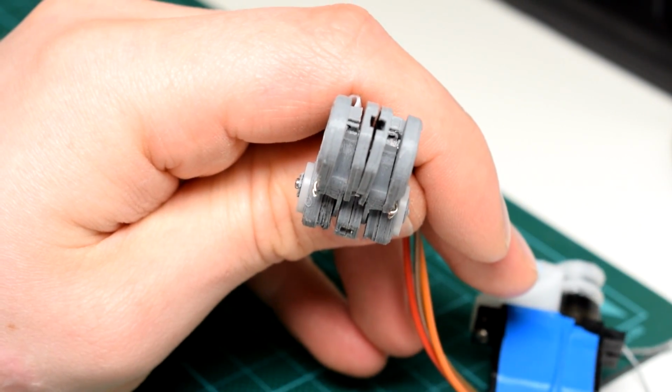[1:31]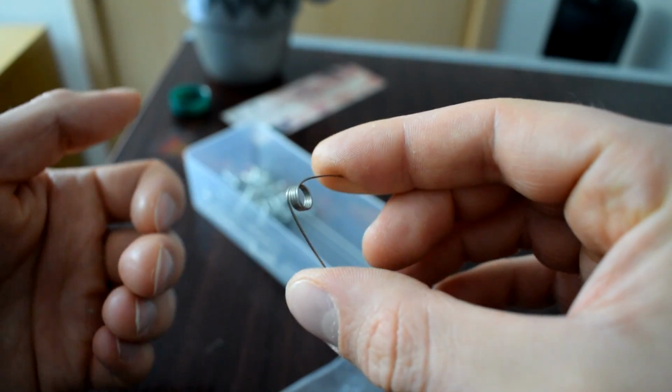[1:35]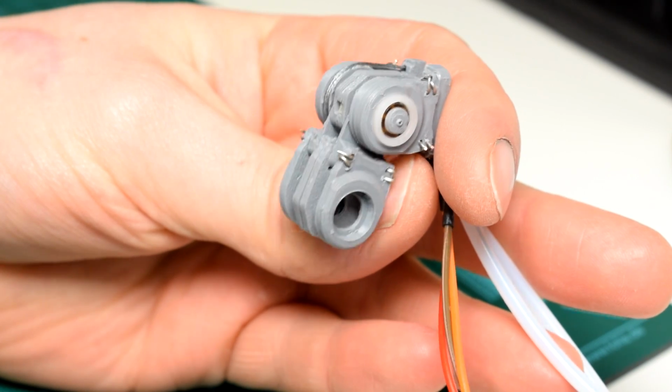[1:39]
I started first of all with a much improved cable actuation system, which uses a pulley at the joint itself. The main reason for that is that it completely removes the need for torsion springs, which are a major annoying, difficult to acquire and unreliable factor in the original design. It also means that there's a consistent application of force throughout the entire range of motion.
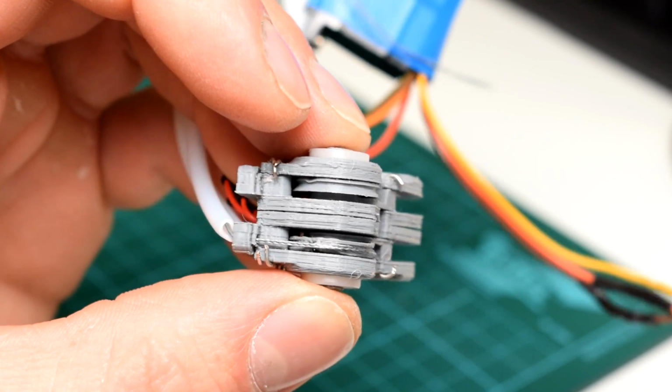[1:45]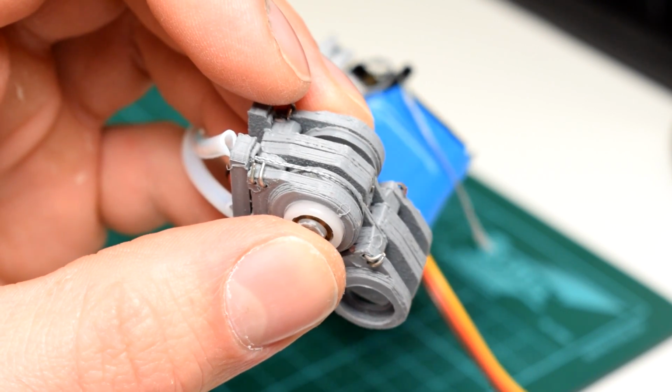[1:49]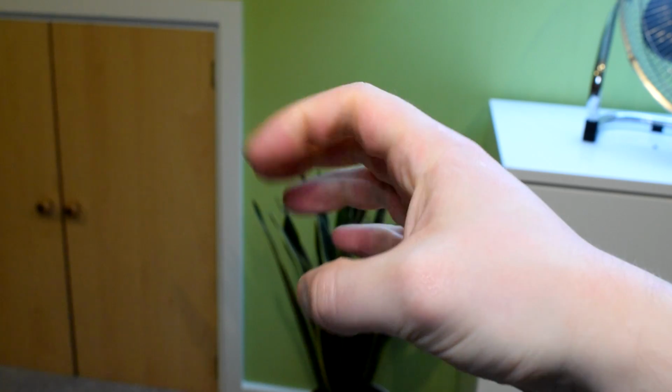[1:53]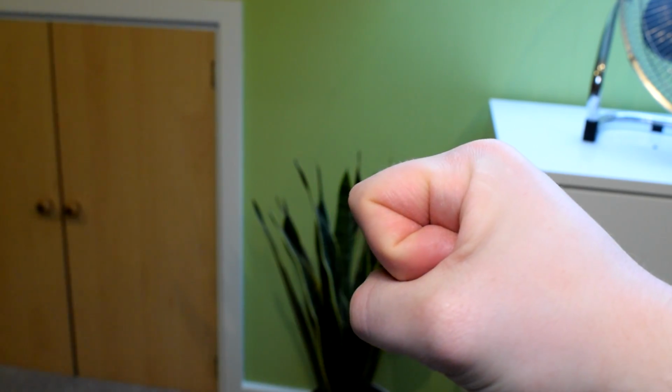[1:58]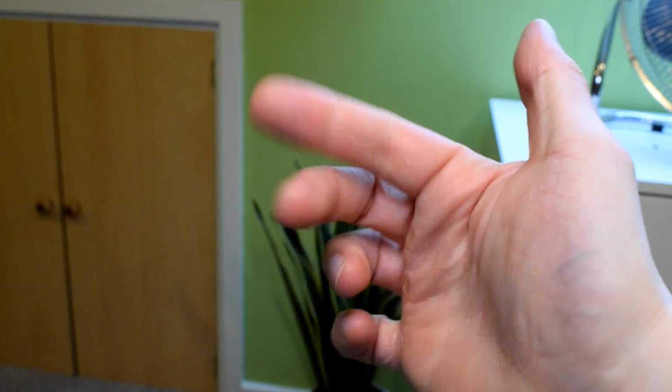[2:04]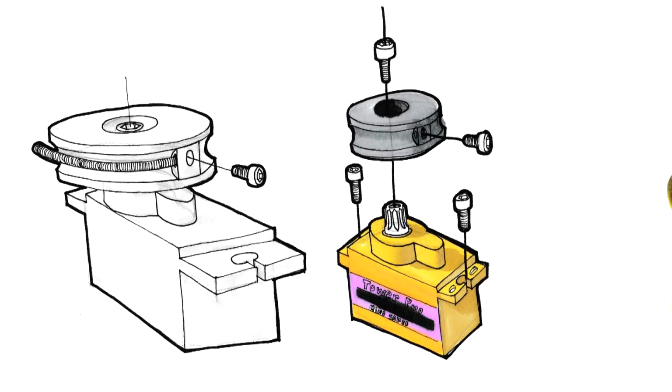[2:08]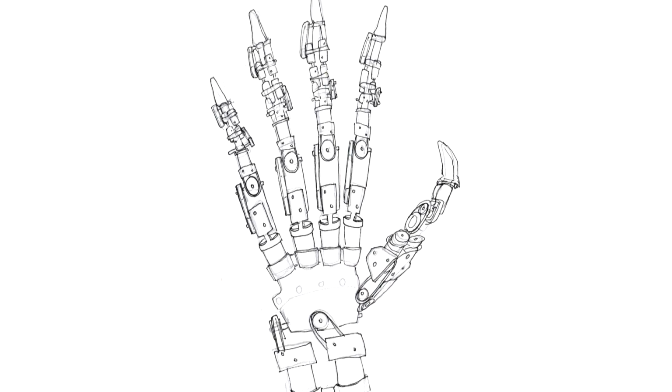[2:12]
Now, something to note about that is that in a real hand, the application of force isn't actually consistent, because the mechanical advantage that the tendons have on the fingers actually changes as the fingers move through their ranges of motion. So in that way, it's not actually biomimetic, so I need to be really careful and define exactly what makes a design biomimetic. Because there are no hard and fast rules, obviously, it's important for me to define what it means in my particular application.
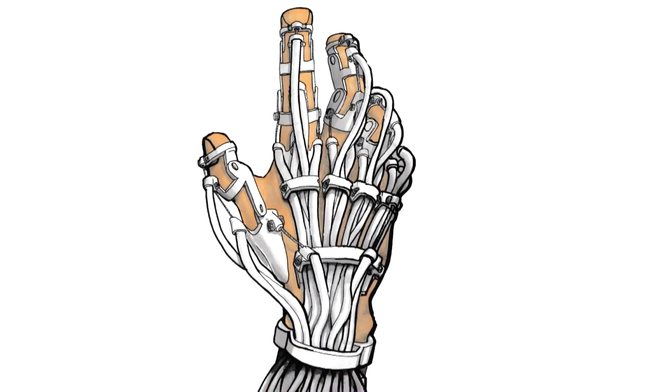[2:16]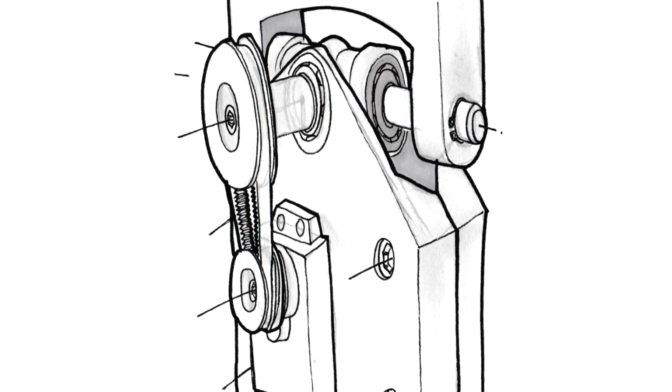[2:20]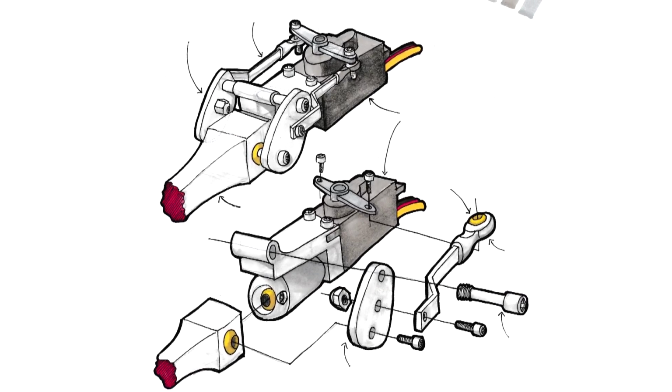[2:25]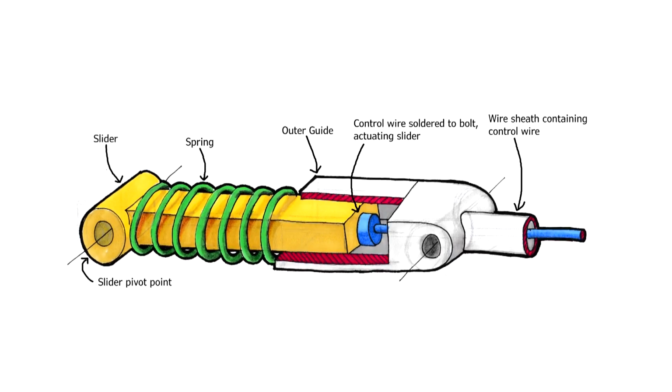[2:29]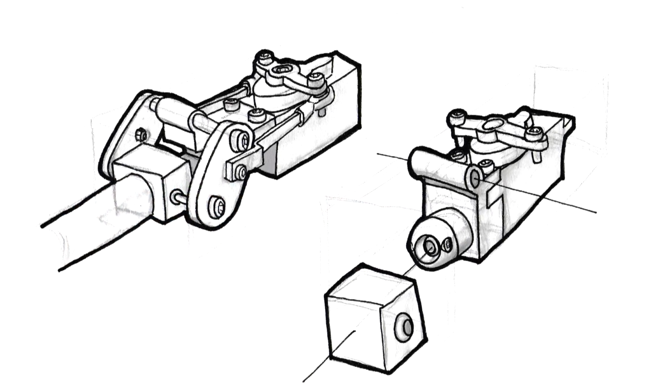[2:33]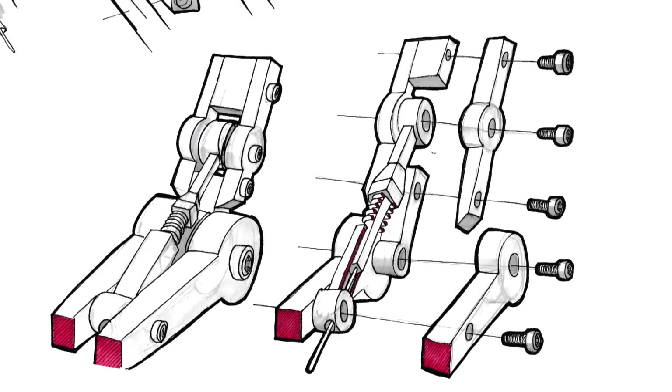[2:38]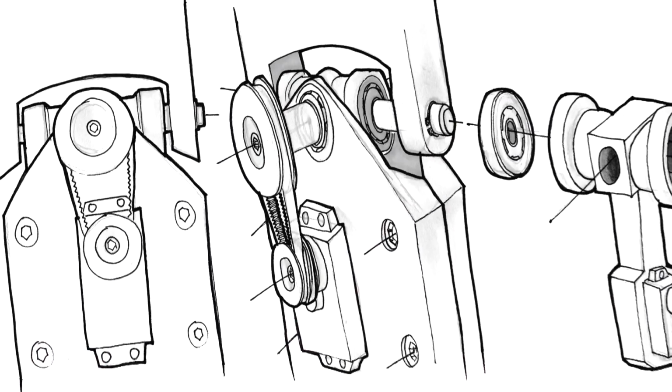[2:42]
When I say biomimetic, what I mean is biomimetic function with regards to the motion of my hand, not necessarily the underlying mechanisms which produce the motion. While I am super interested in designs which use artificial muscles and tendons and that kind of thing, I want to design something which can be practical right now, and I think that artificial muscle designs have a little bit more development to go before I would consider them practical for something like a prosthetic.
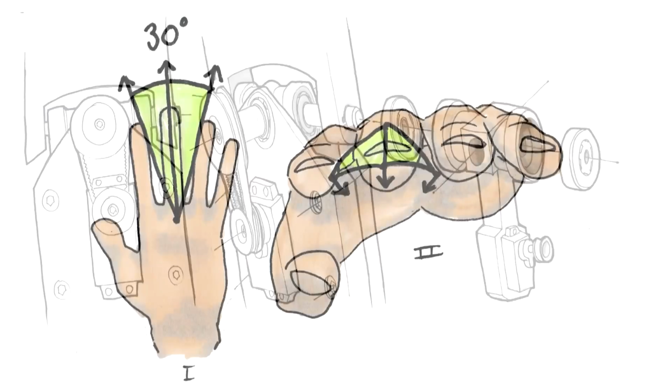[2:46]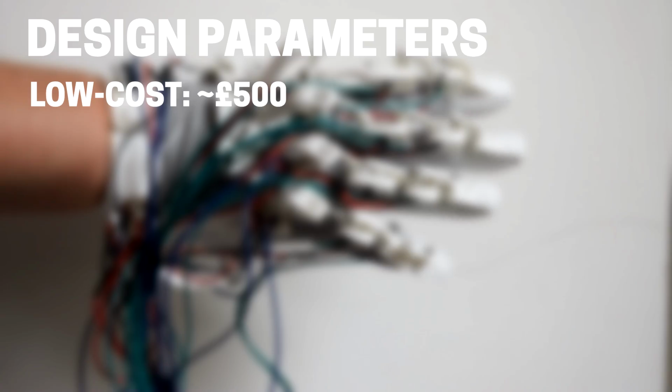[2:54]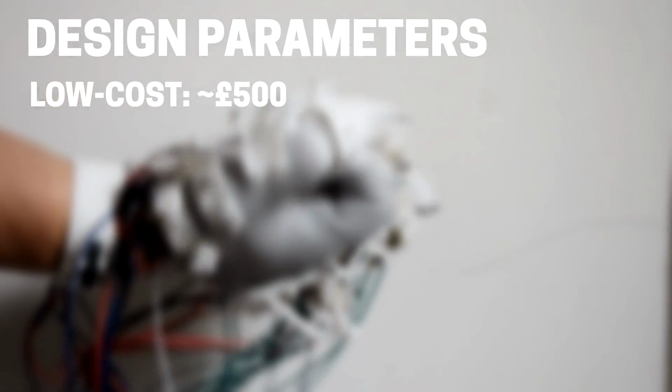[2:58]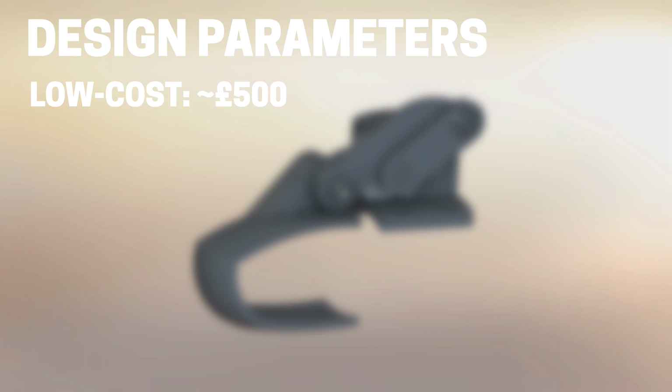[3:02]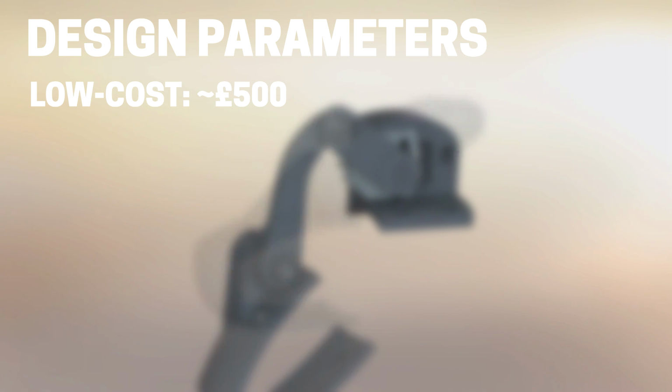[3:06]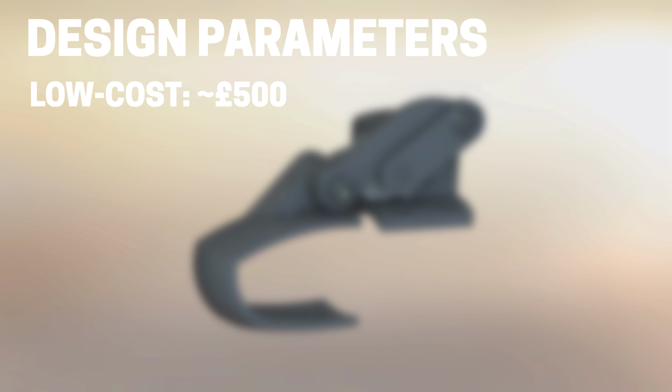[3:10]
So let me go further by clearly laying out my design parameters with this project. First of all, accessibility. I want it to be low cost, because there's plenty of examples of amazing bionic hands at a really high price point, and there's plenty of examples of simple, really practical, useful hands at a super low price point. I want to design something which can be built at home on a fairly low budget, maybe around the £500 mark.
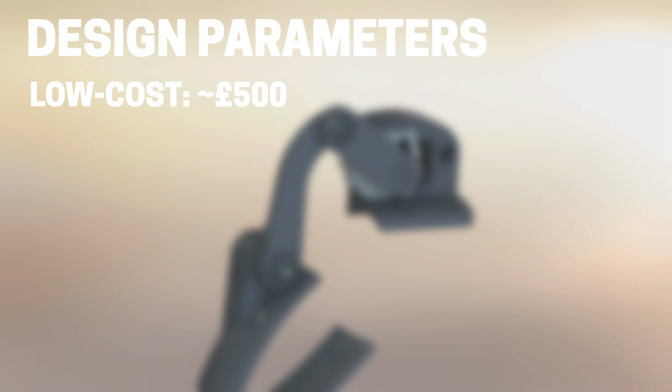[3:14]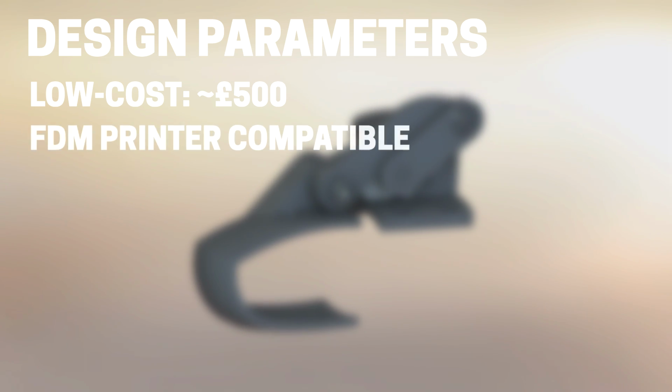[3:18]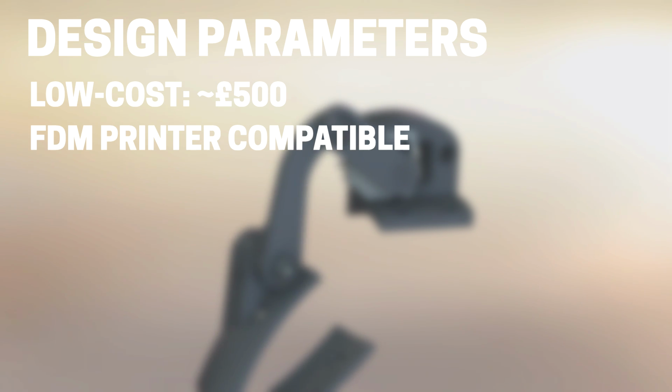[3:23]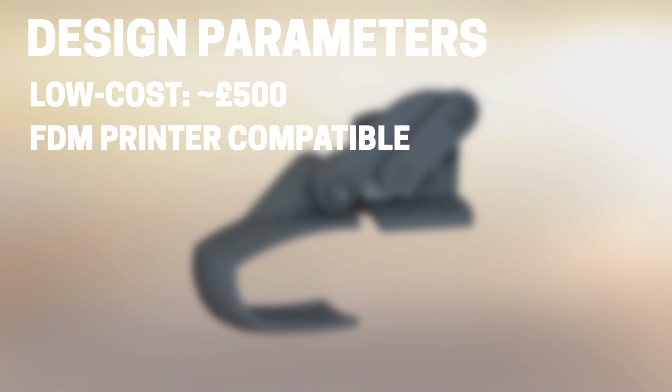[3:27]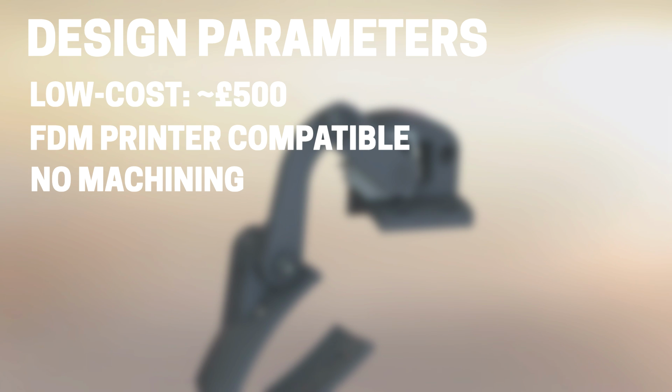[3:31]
When I say buildable at home, I mean I want you to be able to make it with just FDM printing. Because I know not everyone has a resin printer, but a regular FDM printer is really easy and cheap to get a hold of nowadays. And I'm also going to design it with no machining. So if the design goes well, hopefully it'll be the kind of thing that you can build at your desktop.
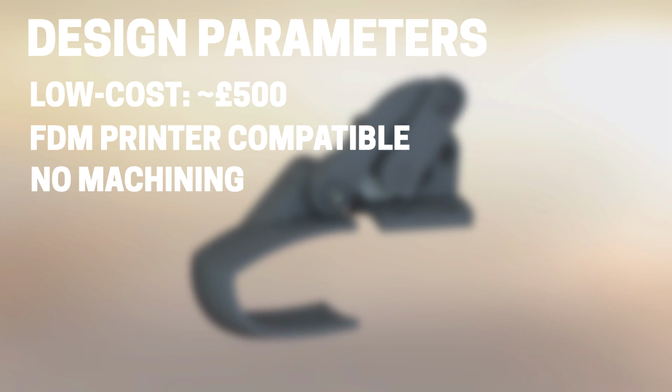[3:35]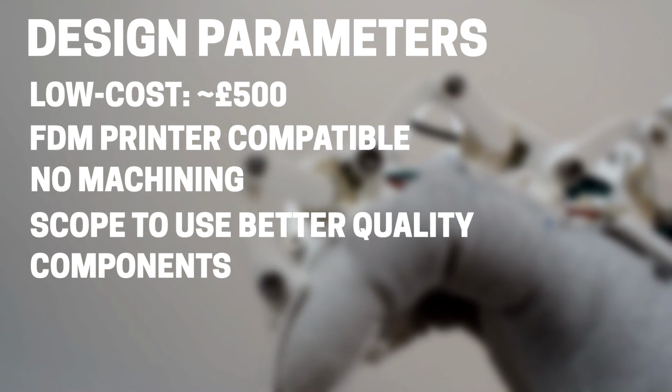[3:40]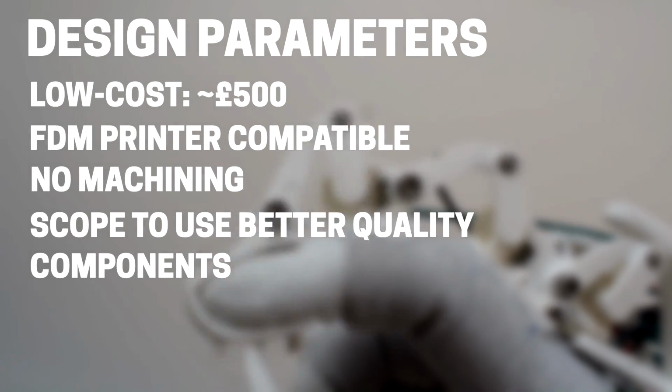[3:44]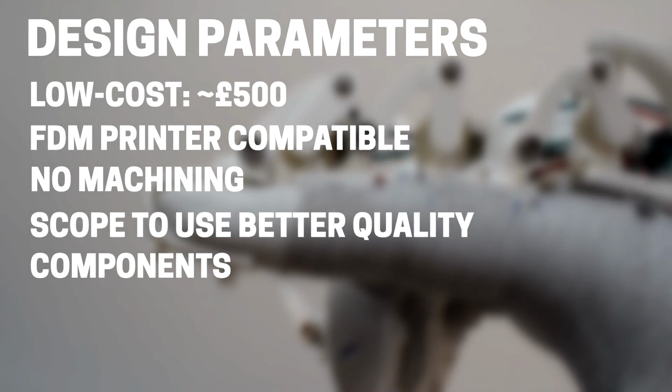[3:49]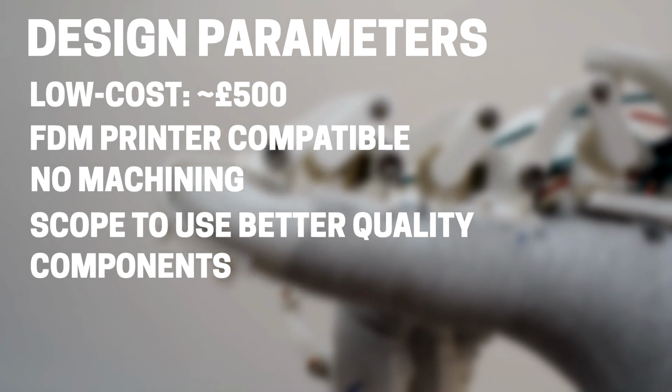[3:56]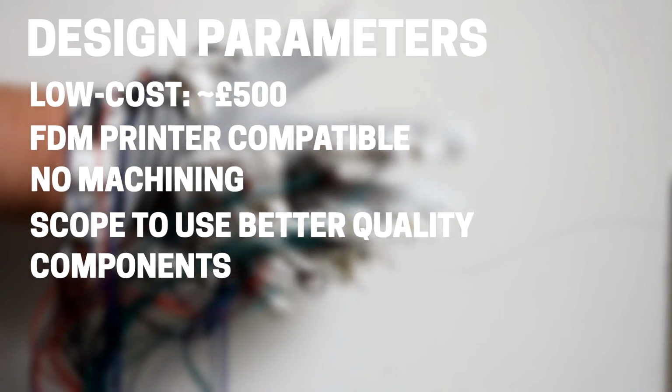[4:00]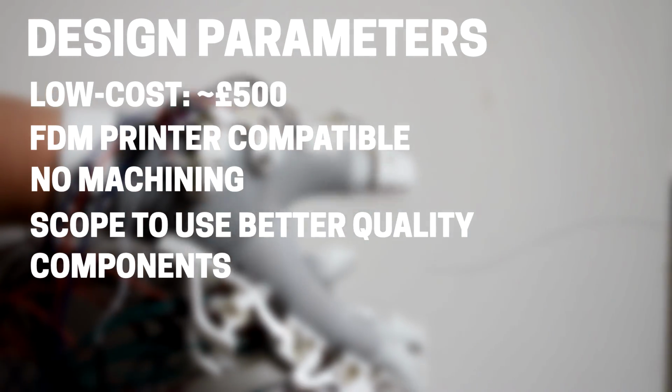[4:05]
I would like to leave in the potential for you to use better quality components, however. There's always going to be the option to use resin printing, or something even better, to make even higher quality components. And there's areas where you could use machining to make, for example, a better quality pivot rod, which could be made out of aluminium or brass or something like that. With this design that I'm intending to build, it's not going to be easy, it's going to be technically difficult to assemble all these tiny little things, but it will be very cheap and accessible.
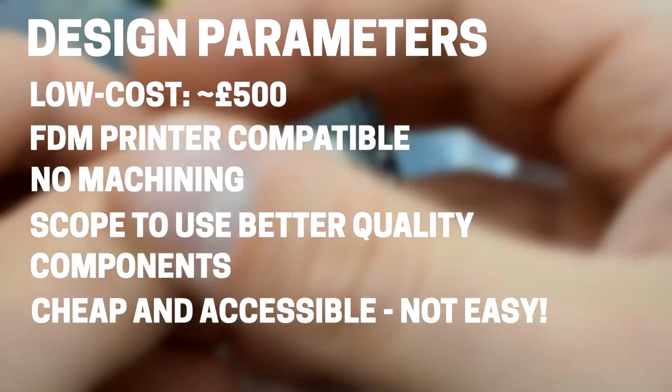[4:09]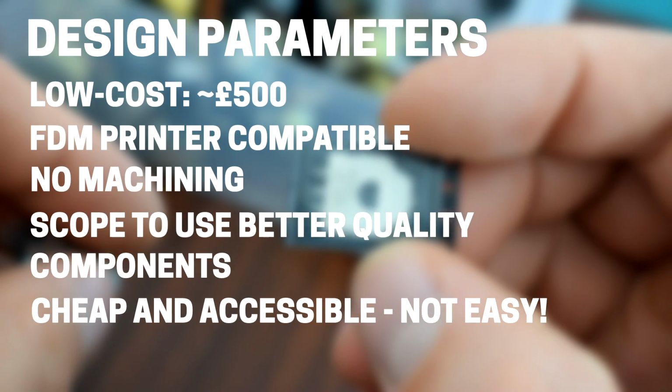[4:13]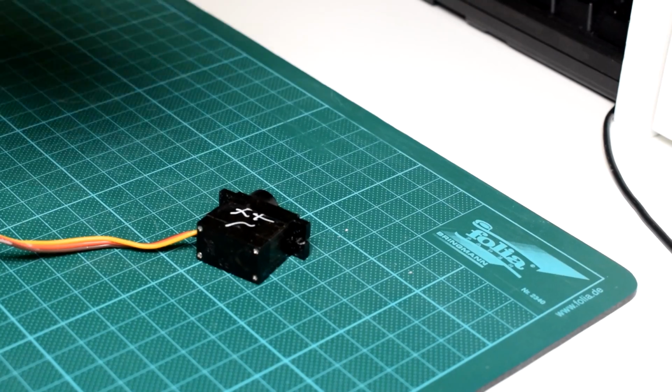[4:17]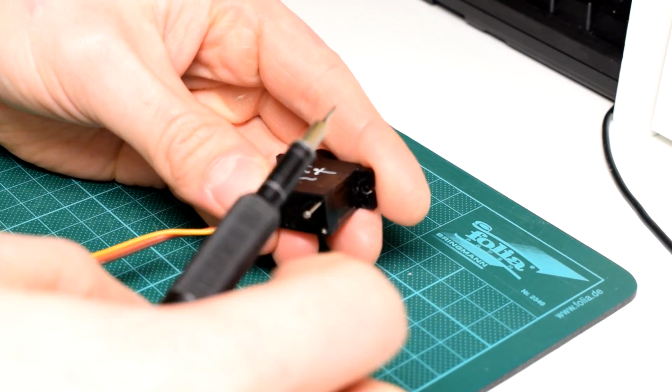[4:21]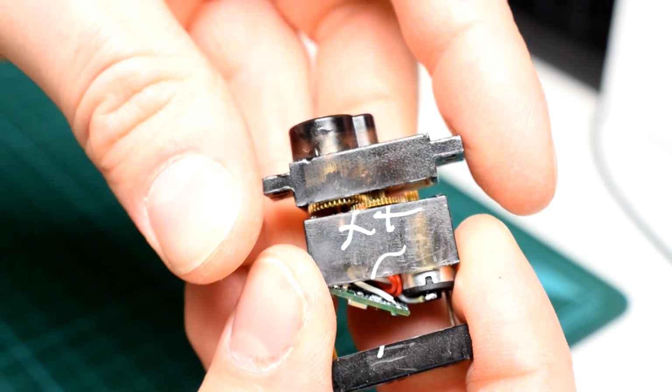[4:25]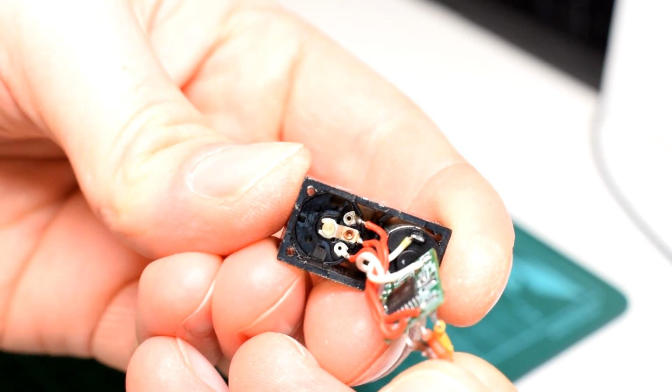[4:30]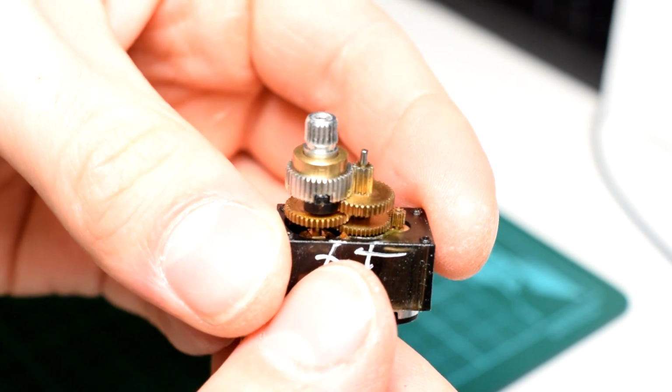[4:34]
So going back to my IP joint design, here's an example of a really cheap solution to joint feedback, which I didn't have in my first design. Servos, like these MG90S servos, work by having a tiny circuit board take a reading from the integrated potentiometer, as well as an input signal, and then this circuit board powers the motor to try and make the potentiometer's angular position match the input signal via the motor and the gear train.
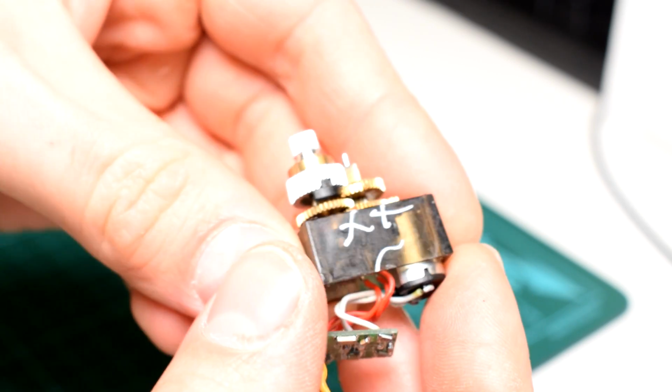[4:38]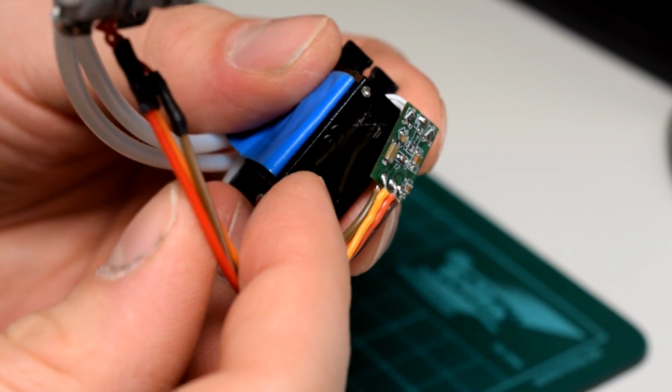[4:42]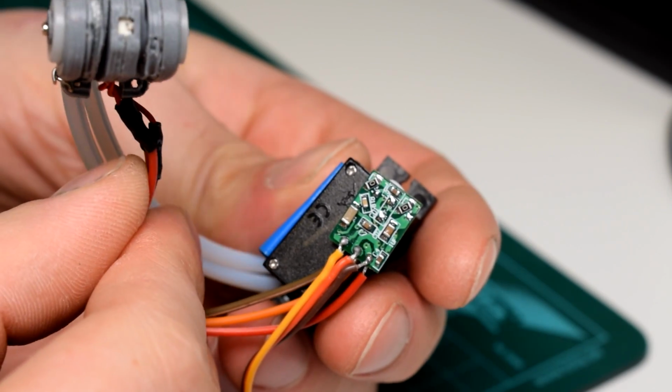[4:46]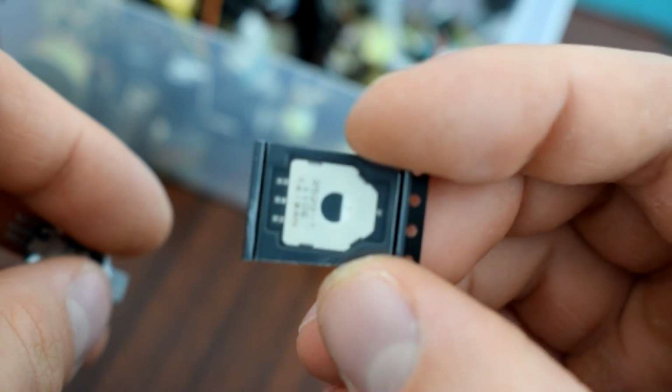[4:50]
So what I've done in this design is desoldered the original potentiometer, although I need to leave it in its place to serve as an axle for some of the gears, and I replaced it with one of these really slim potentiometers that are built into the finger.
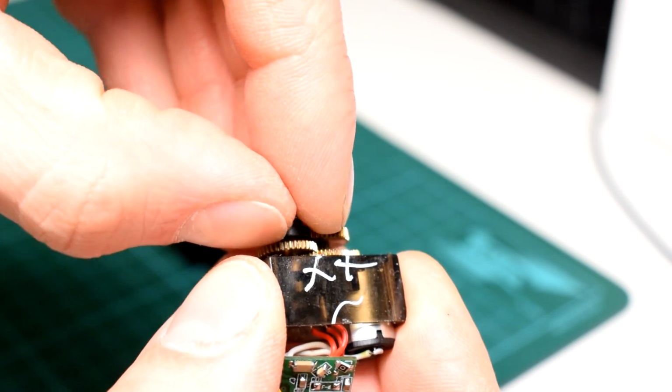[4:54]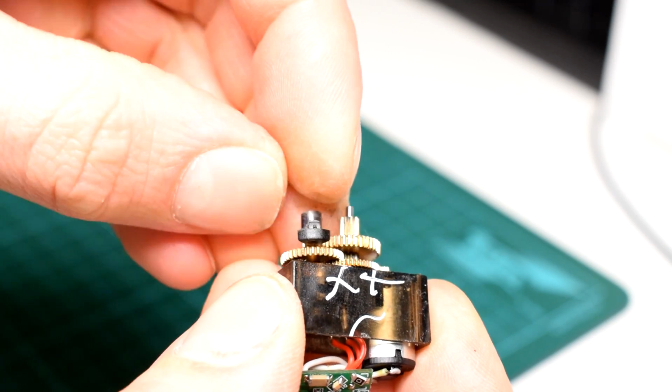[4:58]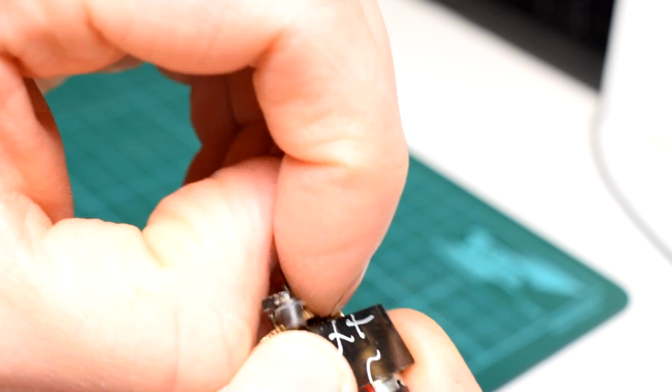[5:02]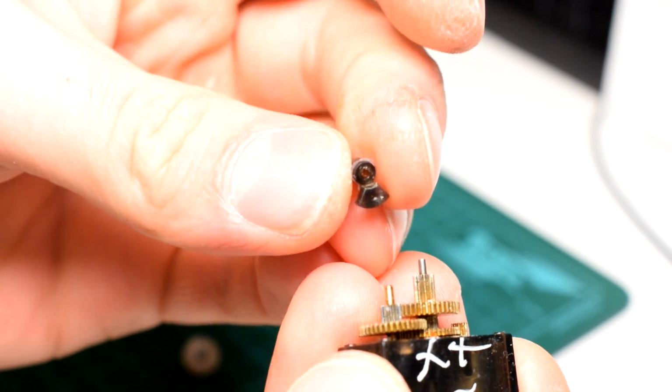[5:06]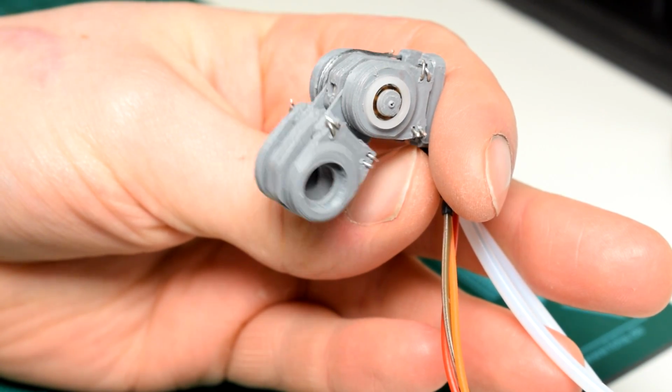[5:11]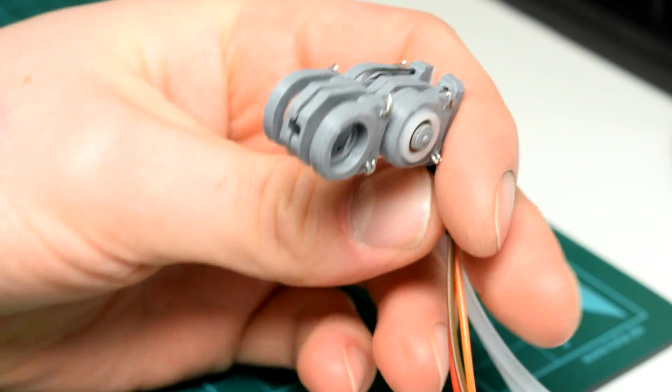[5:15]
I also removed the stopper on the gears, which restricts the servo to 180 degrees of motion. That's there so that the servo doesn't damage its own potentiometer. But since the potentiometers I'm using can rotate 360 degrees, there's no need to worry. And the motor can just keep spinning until it's at the exact right position, which is really handy. And it means that there's no need to calibrate the servos whatsoever.
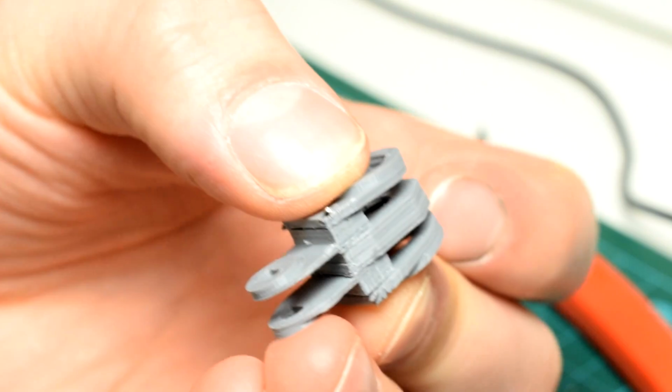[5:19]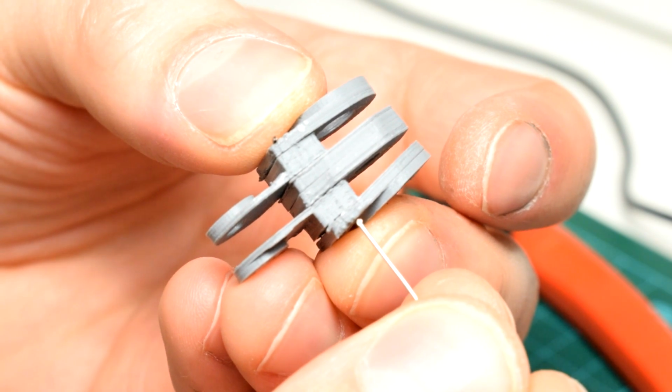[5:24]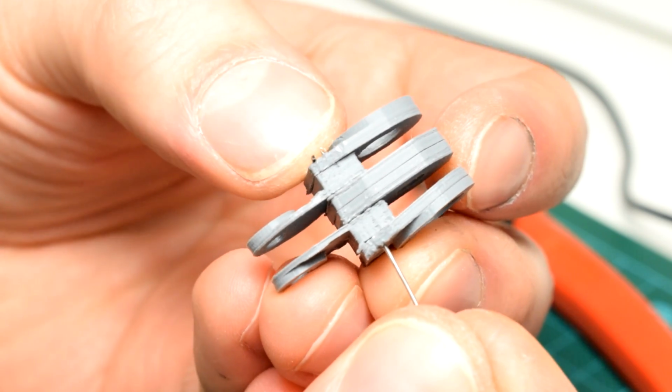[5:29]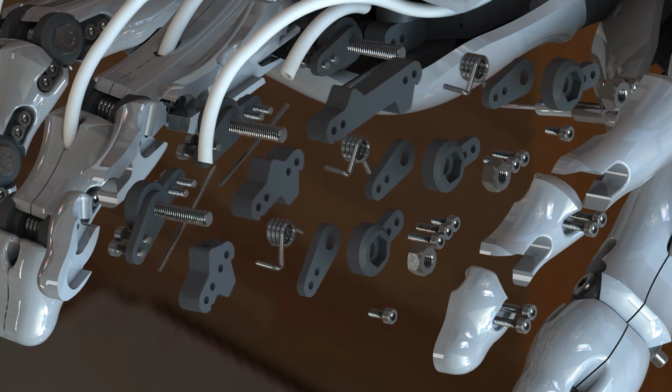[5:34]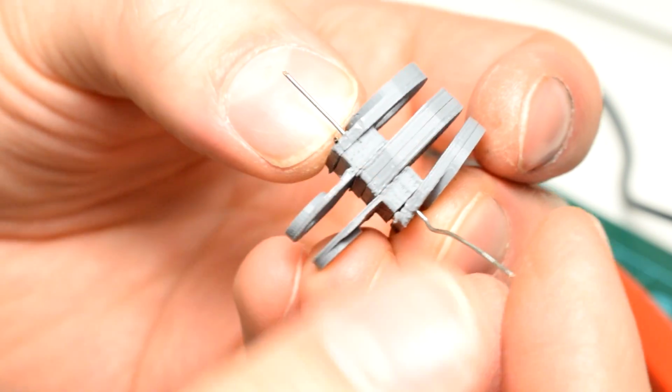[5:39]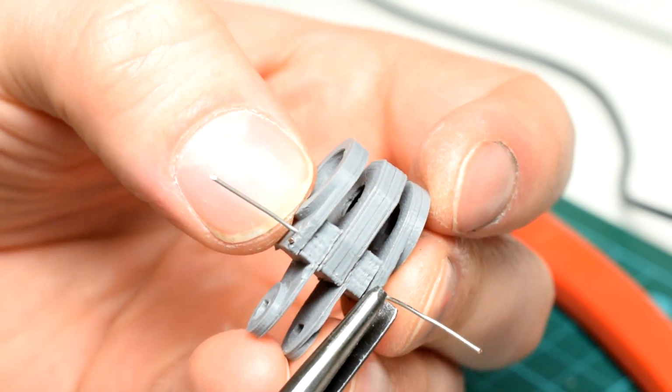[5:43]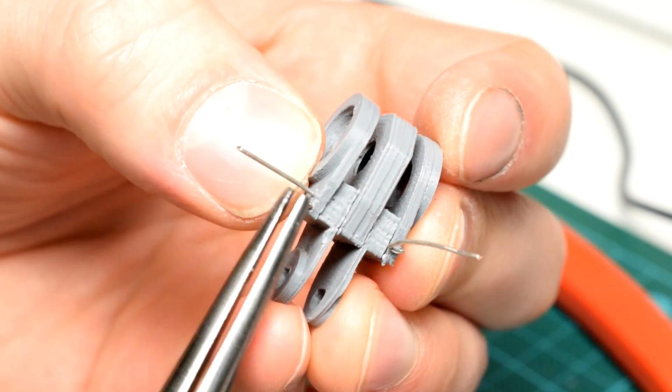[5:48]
Now, because my printer is FDM, and because some of these joints are very complex and need to fit precisely to different components, I've sliced up the joint into several little slices. I did this same thing with my original design for the same reasons, but on that design I screwed the parts together with M1.6 screws, which added a ton of weight to the design. In this design I have half a millimeter holes running through, so a thin wire or potentially some brass rod or something like that can be used to align all the pieces and increase the strength beyond regular layer adhesion if it was all 3D printed.
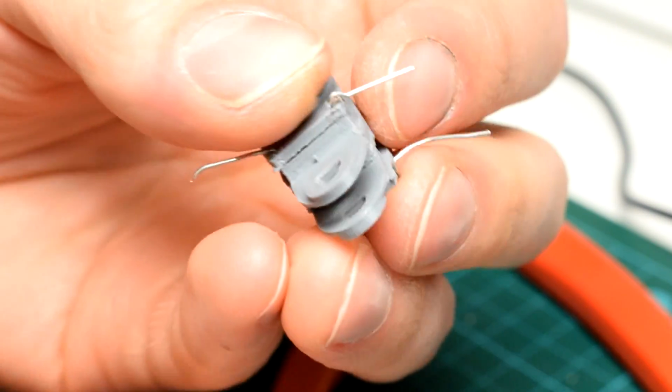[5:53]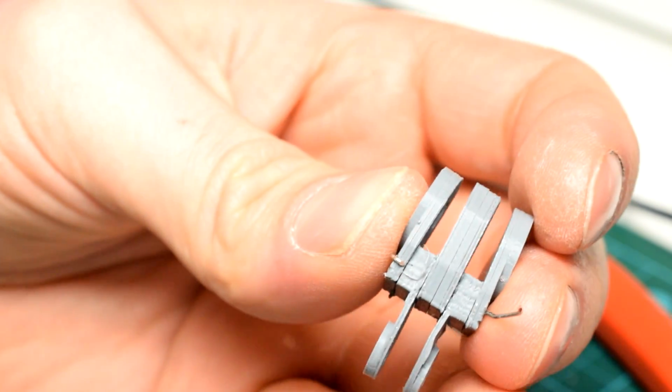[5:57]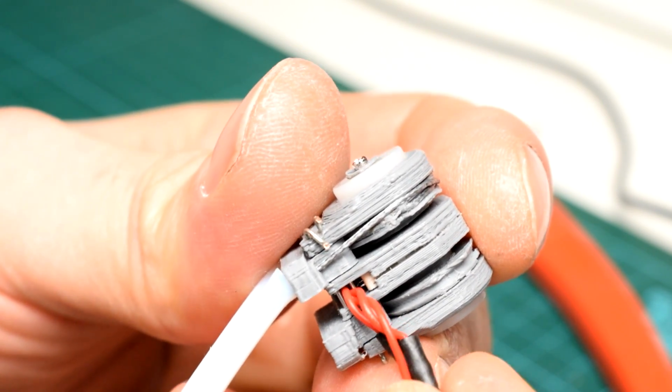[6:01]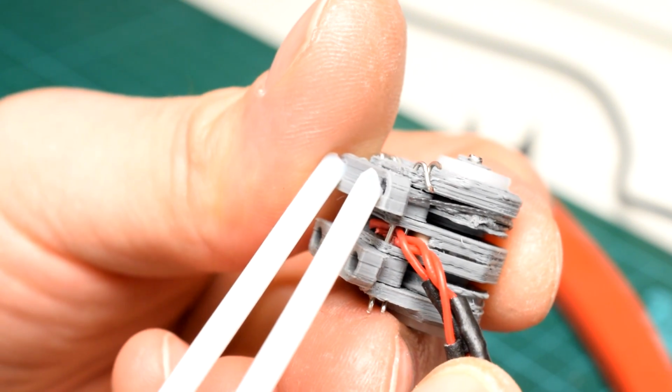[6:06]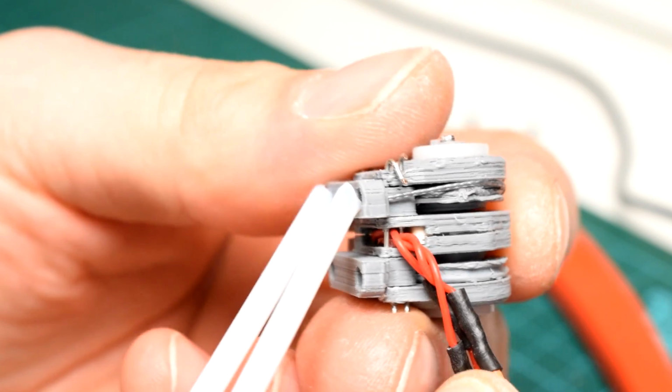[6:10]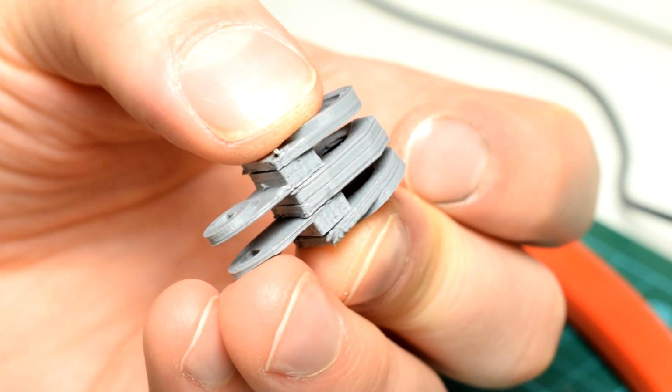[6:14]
And they can be glued, twisted or bent to hold the shape. The wires that hold the phalanges together also clamp against the potentiometer wires and provide some strain relief, which was a big lesson that I learned when I was designing my control glove with these exact same potentiometers, is that tiny little soldered joints like this need some form of strain relief so that they don't pull off. Luckily it can be sort of built into the base design like this.
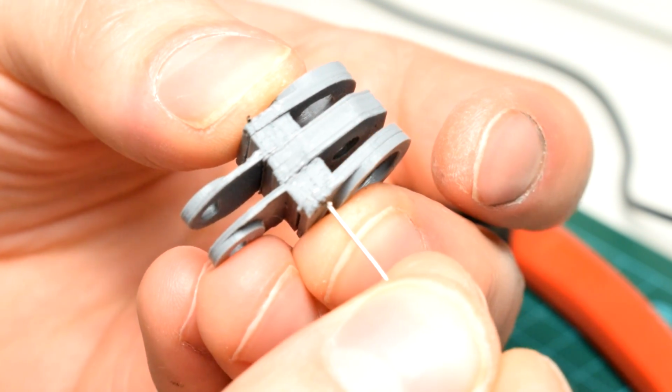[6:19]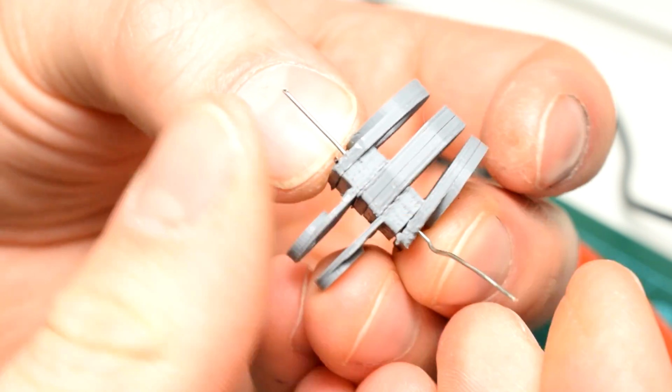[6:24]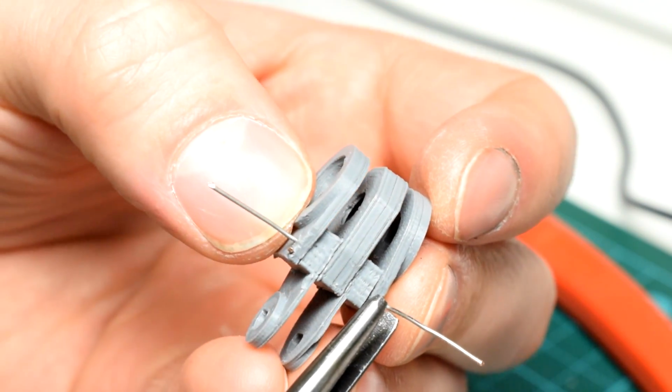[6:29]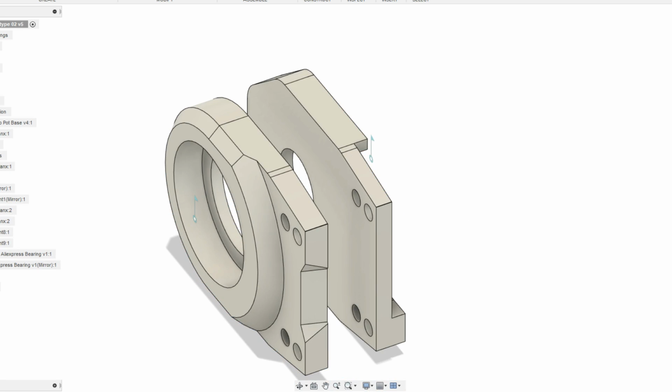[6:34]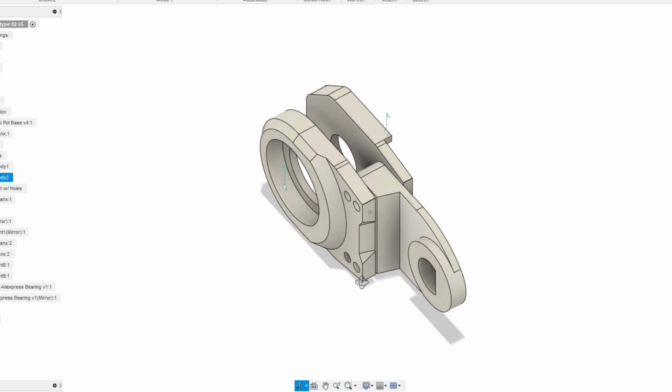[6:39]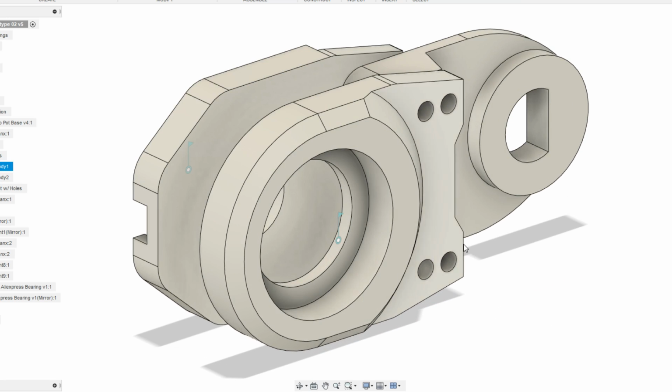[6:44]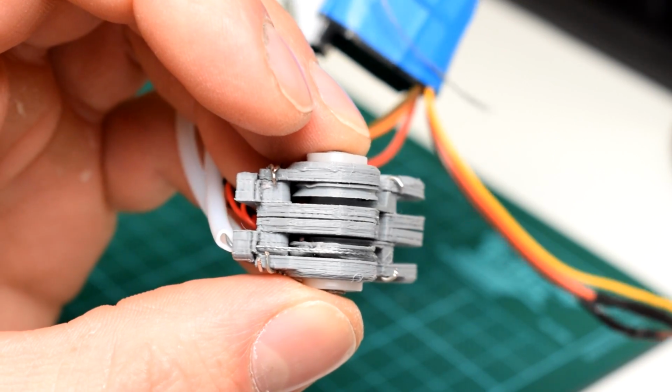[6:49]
Now of course wiring the phalanges together like this is a fairly ugly solution. But of course, if you have access to a really good SLA or resin printer, then you could print all these components as just one part. It's just that with FDM printing, without using dissolvable supports, it would be really hard to get some of these hole sizes accurate enough to fit in the bearings and potentiometers and whatnot. So having everything segmented like this helps to be able to print everything as precisely as possible on less capable printers, shall we say.
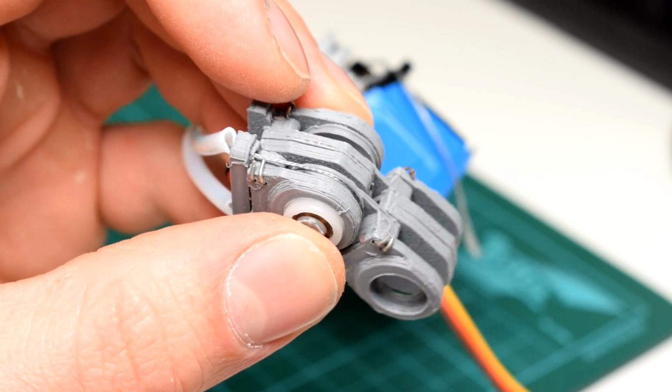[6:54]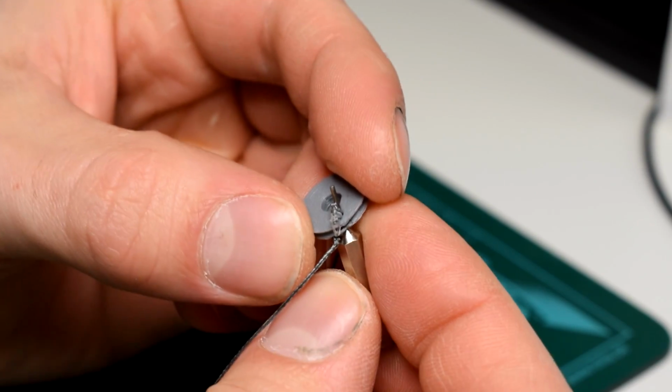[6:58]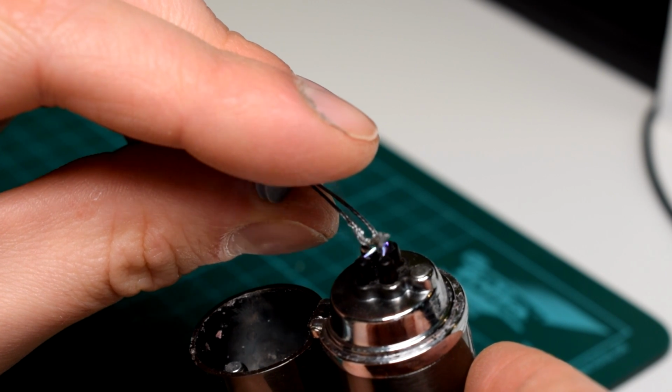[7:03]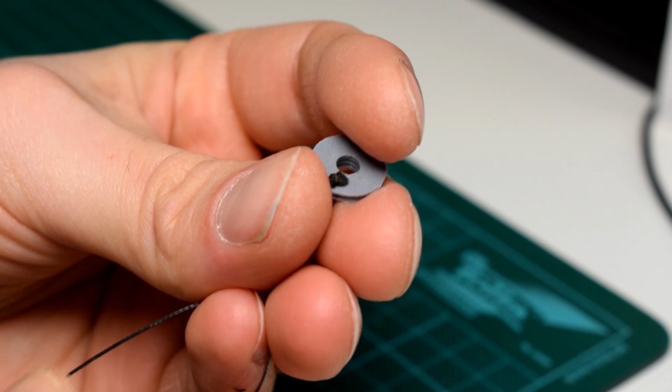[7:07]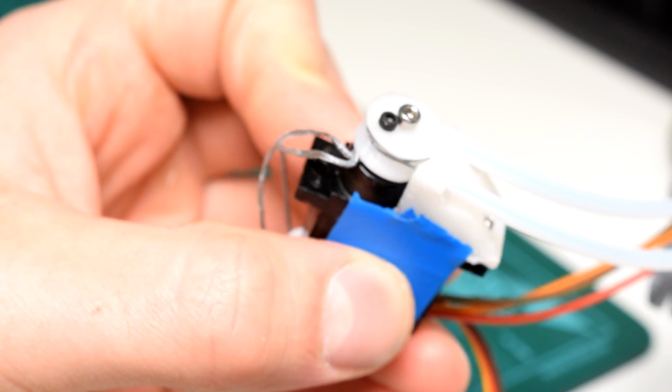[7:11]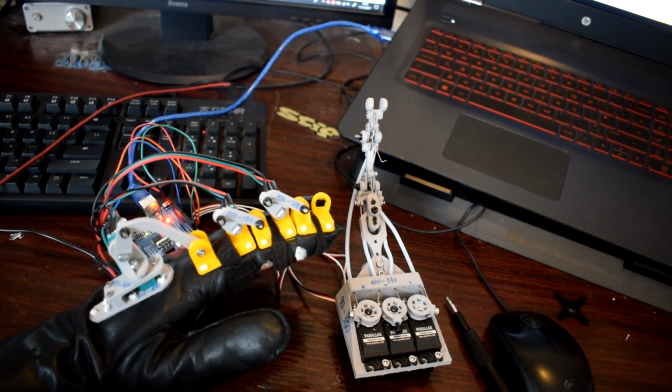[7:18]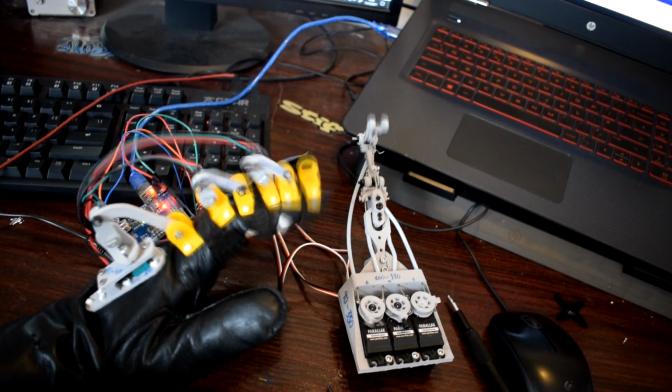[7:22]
I designed the pulleys to be as low profile as they can possibly be, and they could potentially be even smaller than this, since it would actually be possible to use even thinner control wire. But at the end effector, the wire is bent to make it thicker. On my original pulleys, I had a threaded insert and M3 screw in order to connect the wire to the phalanges, so the pulleys which sit on the servo itself, the ones that I'm using now are very petite compared to the original pulleys, only as thick as the actual servo housing itself. Originally, I used, again, a threaded insert and M3 screw to secure the wire, but now I'm just using one M1.6 screw, and it's honestly easier to adjust.
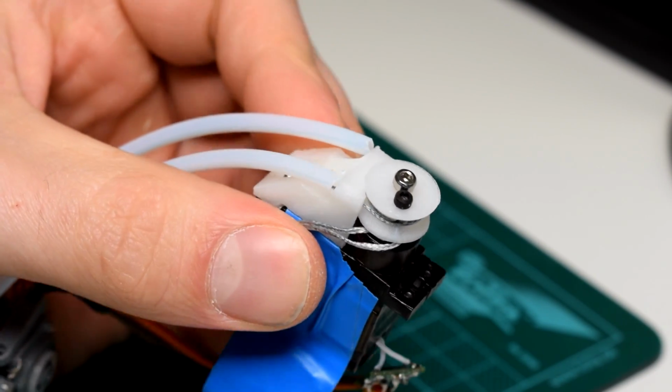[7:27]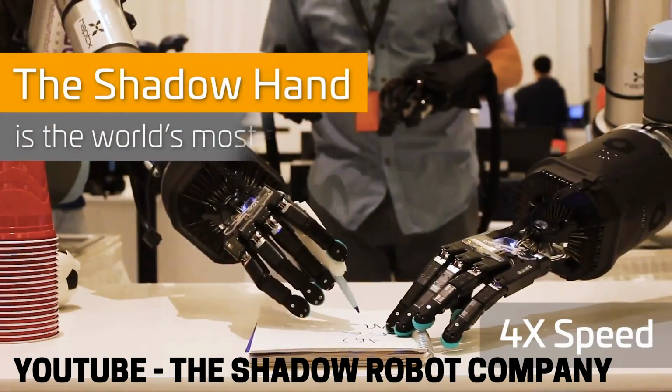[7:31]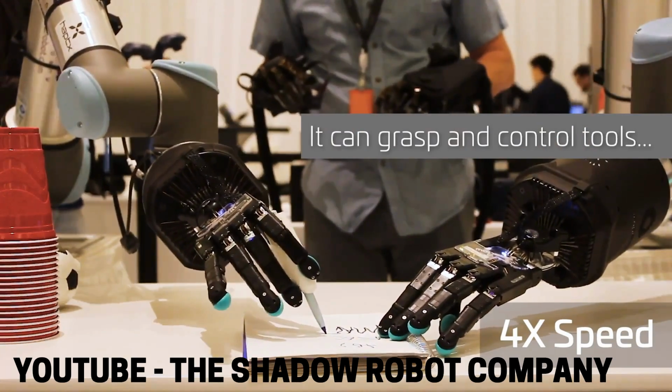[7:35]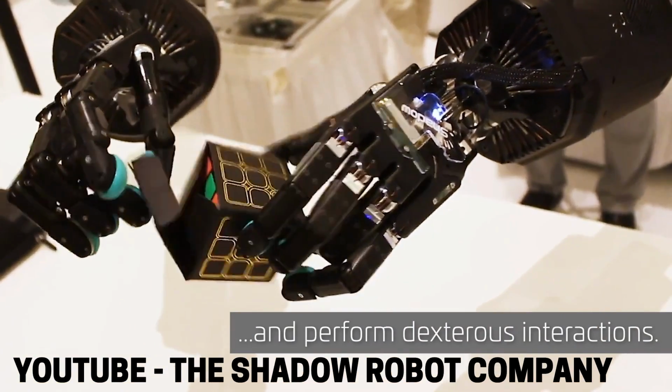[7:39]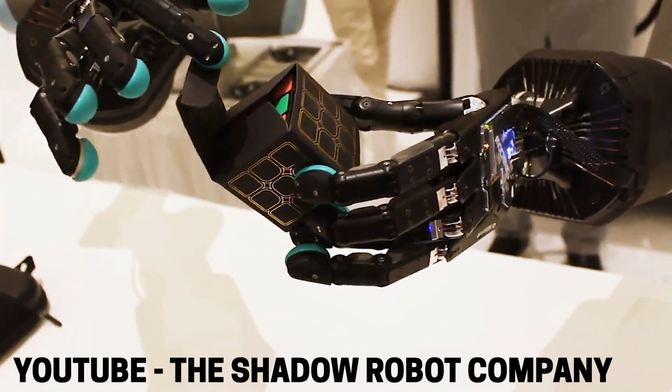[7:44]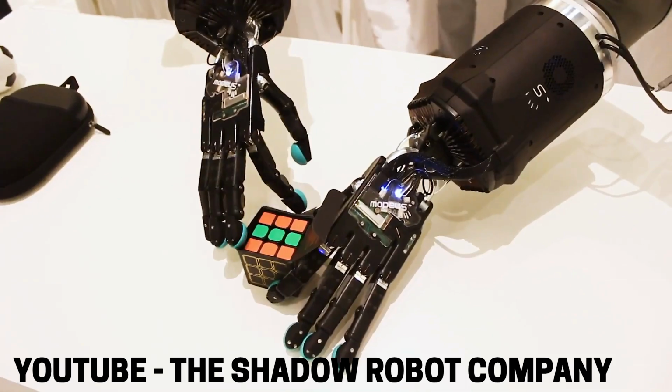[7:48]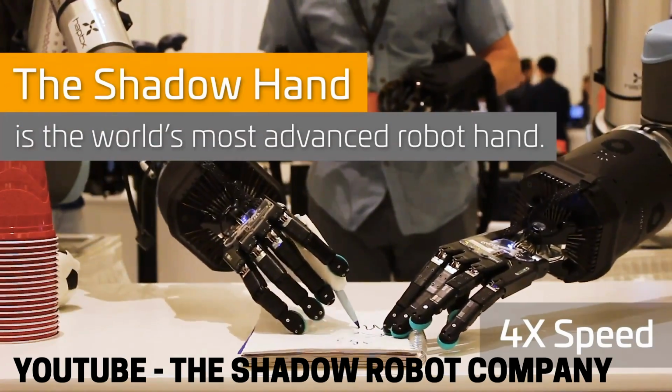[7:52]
So, functionally, I'd like the final design to resemble something like the Shadow Hand, if you've seen that before, but obviously at a much lower cost and more accessibility. And although I have a ton of respect for that design and think it's an amazing robotic hand, I'd like my design to be a little bit more organic looking and a little bit less angular, and I'd like to build a forearm as well and try and integrate all of the actuators in a more seemingly organic way.
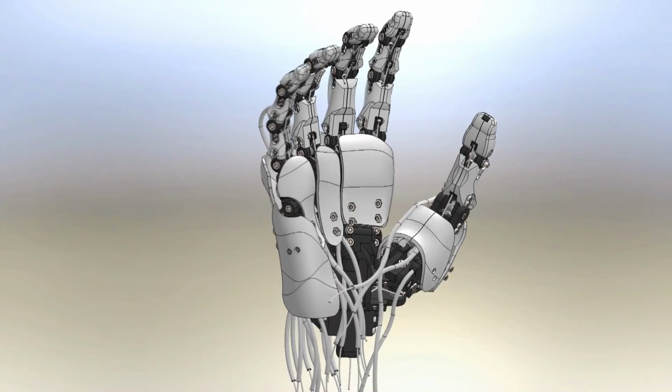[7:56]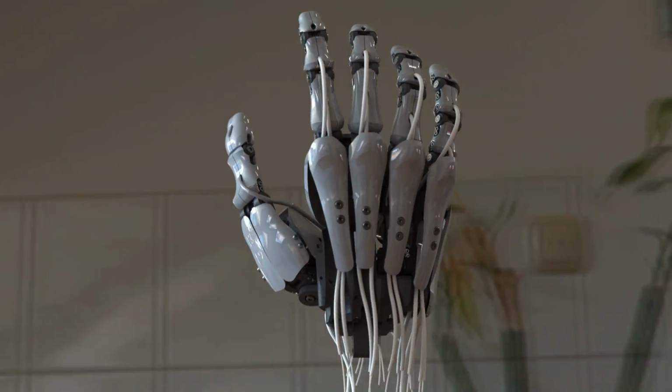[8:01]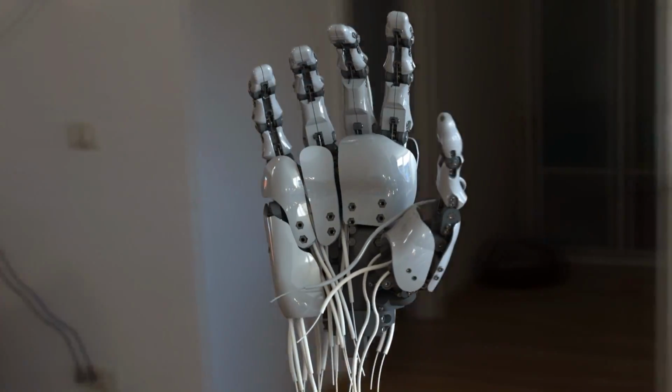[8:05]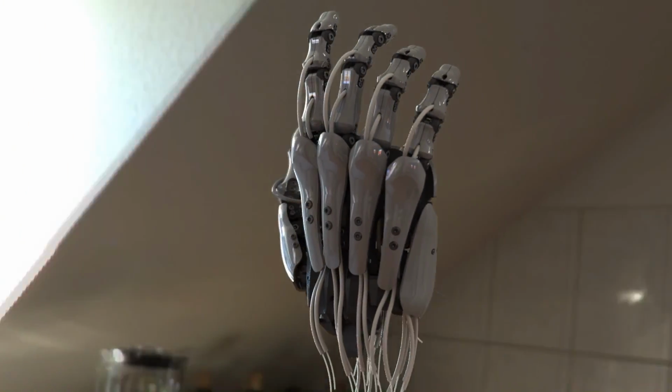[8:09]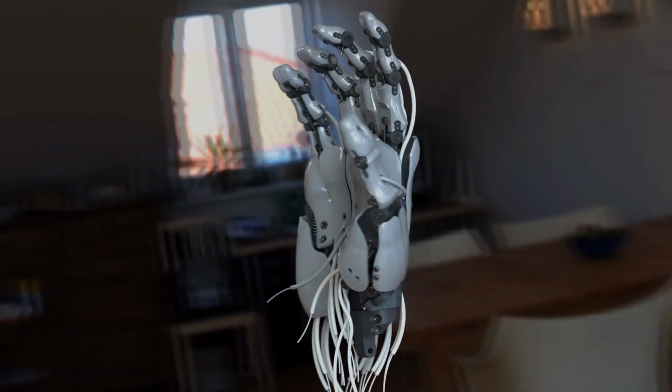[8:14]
The design process, as I mentioned, is going to be going through each component and joint in the hand and optimizing each part as much as possible. And the way that I'm going to document this is with these in-depth videos on each individual component of the hand. And hopefully you guys are going to give me some feedback since it's going to be open source and we can help to make it better.
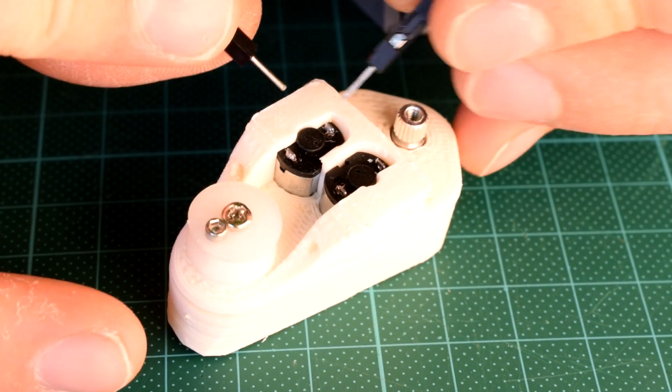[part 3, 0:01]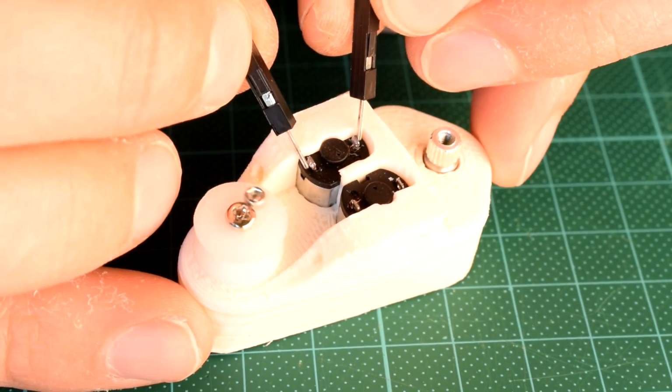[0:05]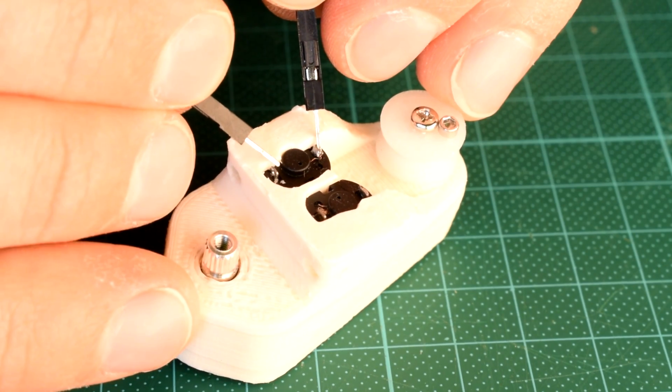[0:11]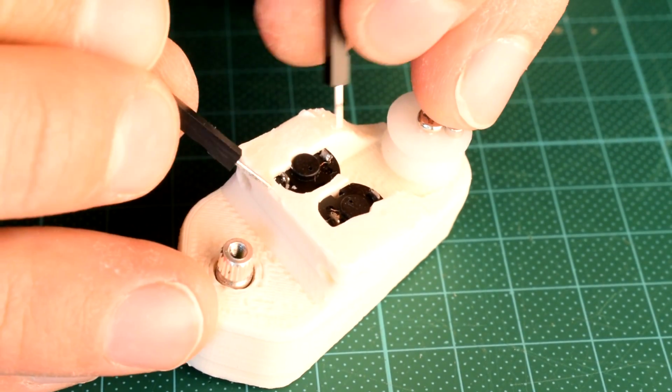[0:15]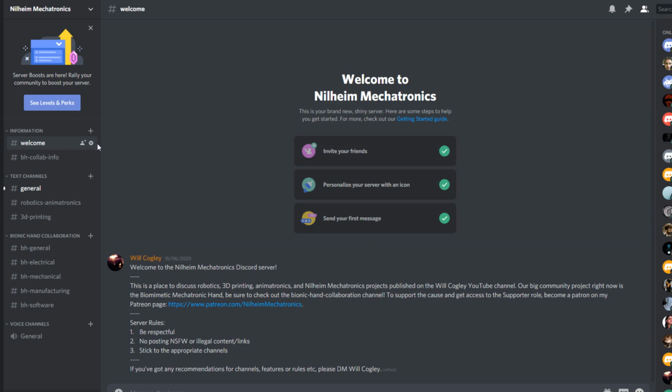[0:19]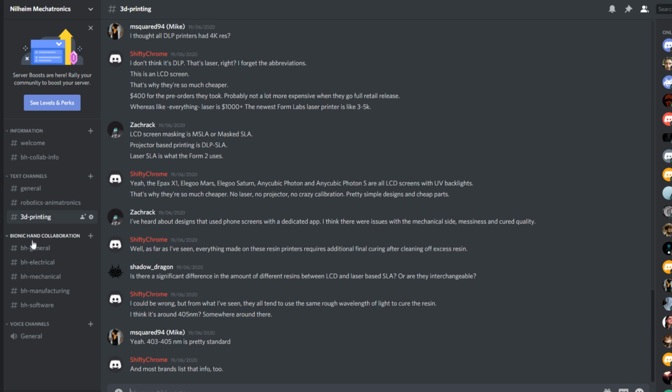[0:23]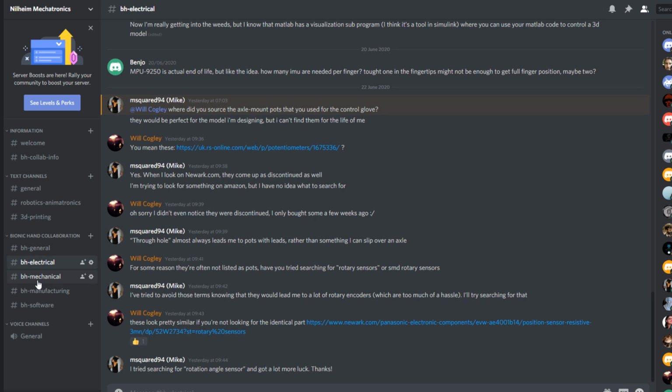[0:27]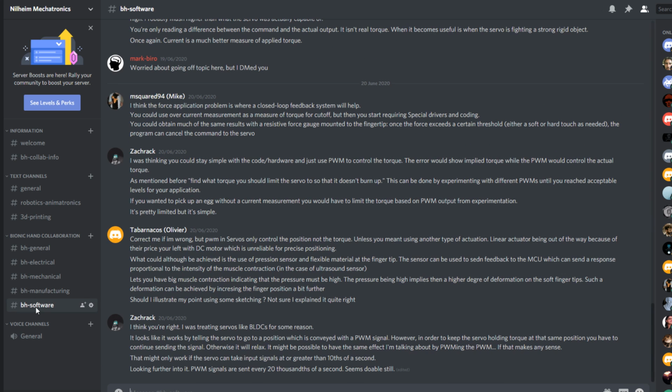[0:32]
So this video is going to be about the joint design of something I've been working on for my bionic
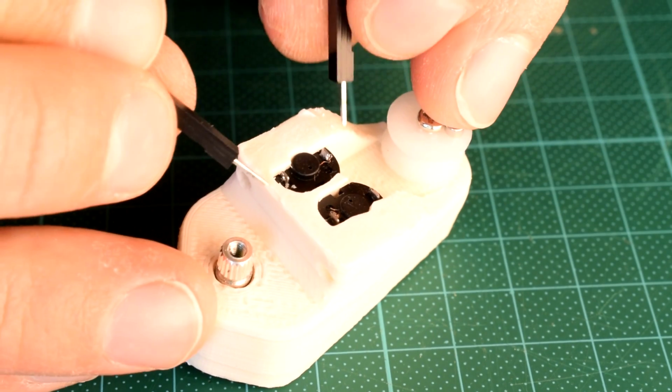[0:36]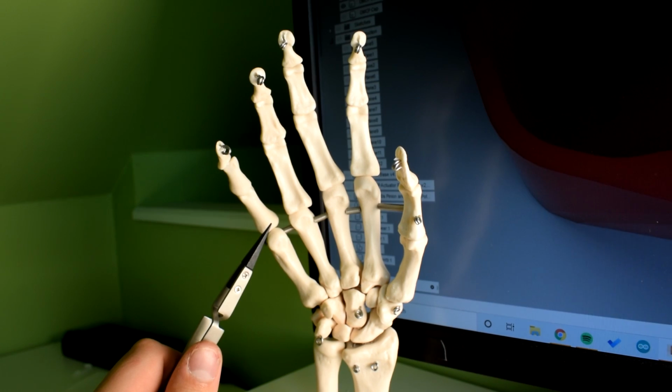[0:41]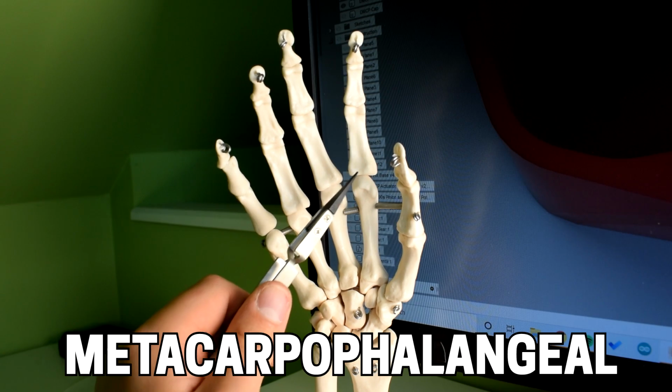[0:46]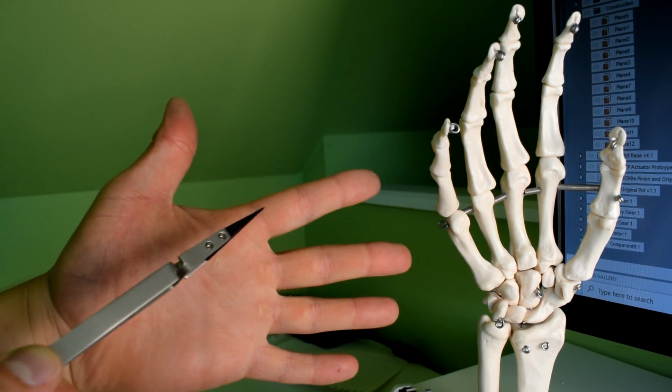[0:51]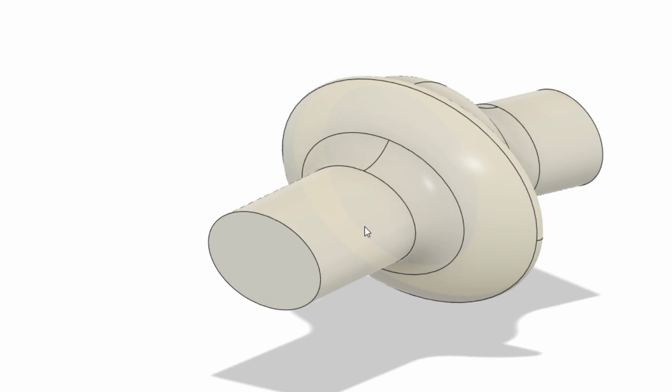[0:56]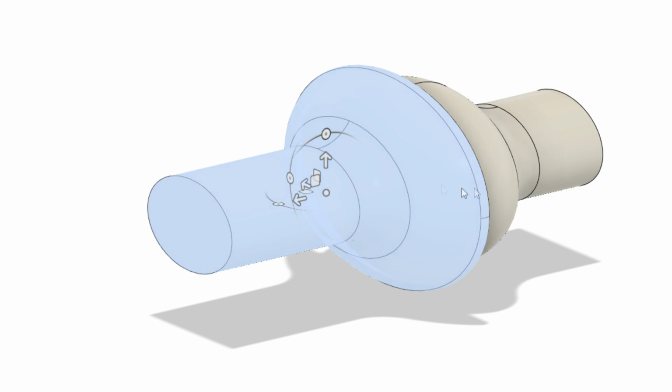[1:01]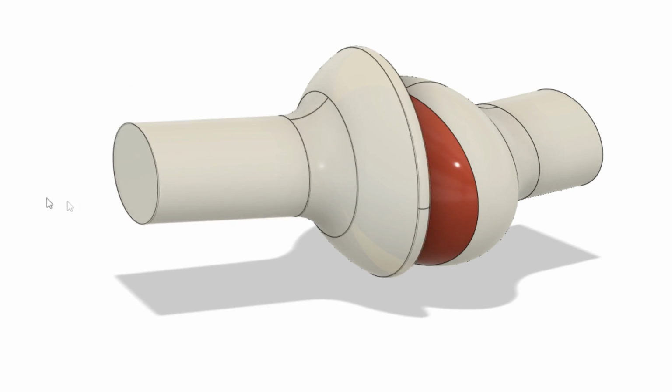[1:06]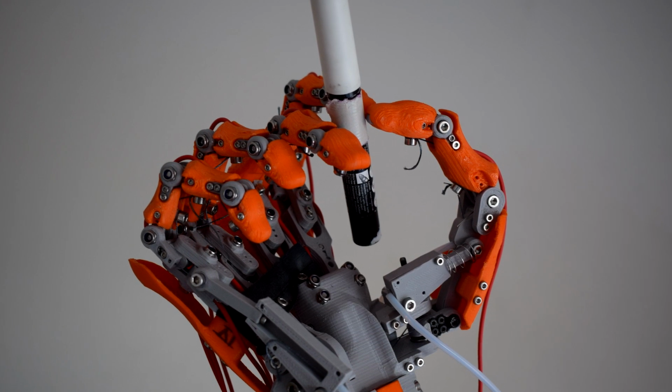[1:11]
Another one of the important joints in the hand is known as the MCP joint, and this stands for metacarpophalangeal joint. So this is the joint between the metacarpals and the phalanges, like the joint between the fingers and the palm of the hand. It's modelled as having 2 degrees of freedom, but the actual joint surface is like an elongated ball socket joint, which allows the fingers to move both laterally, which is side to side, and in flexion and extension. This lateral movement, as opposed to a simple hinge motion, is super important for a wide variety of grip types.
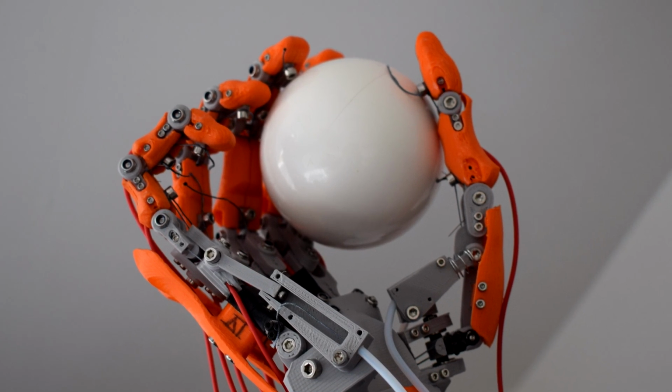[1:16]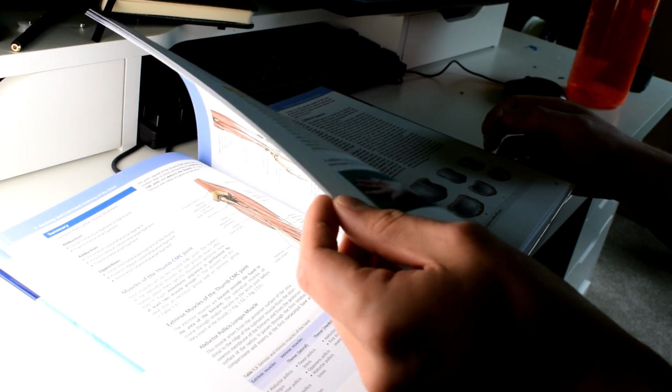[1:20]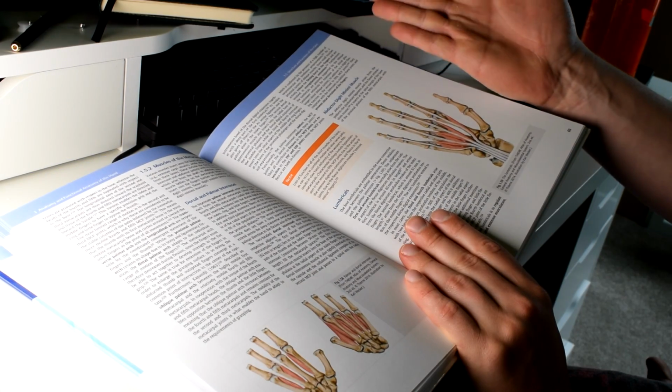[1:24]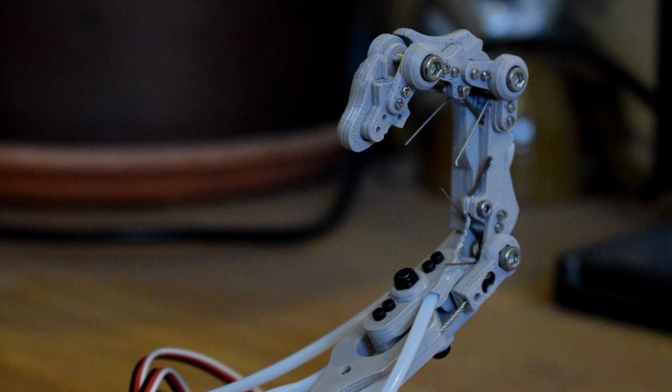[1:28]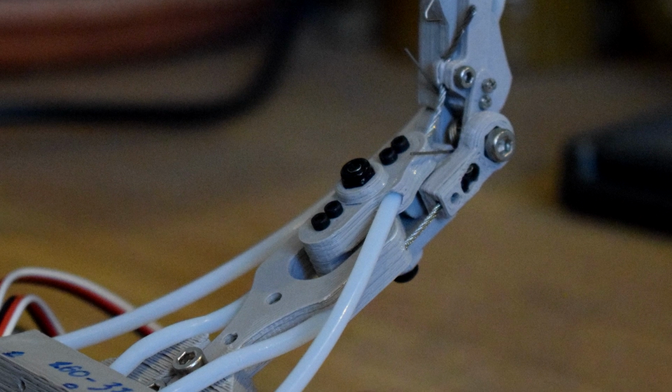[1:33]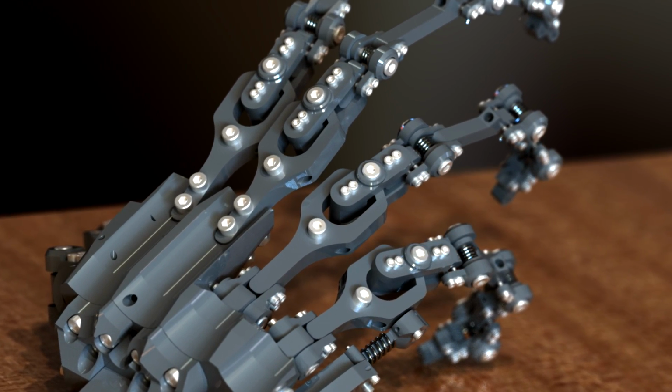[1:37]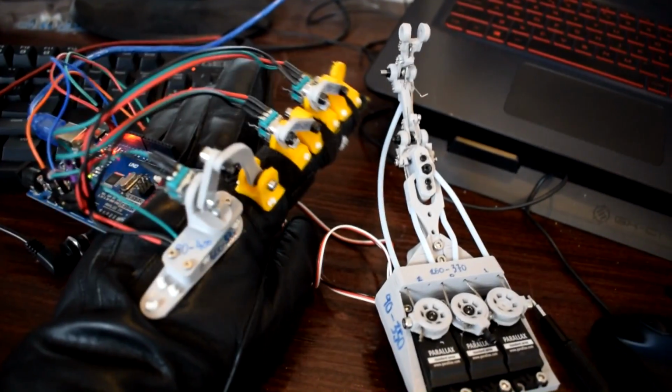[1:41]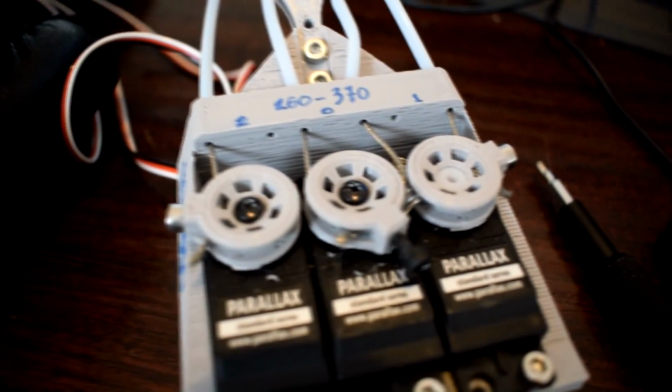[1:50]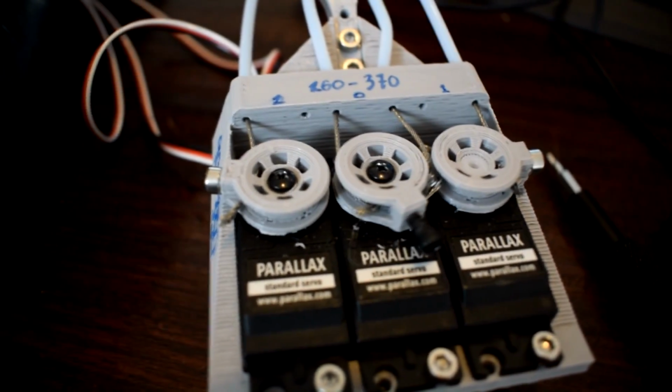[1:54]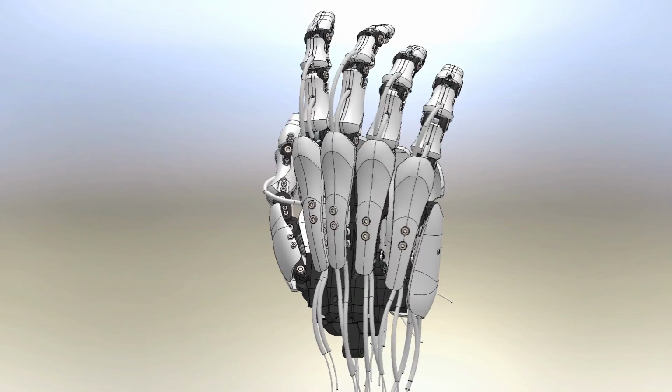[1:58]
In a real hand, the flexion and extension is achieved with the flexor and extensor muscles in the forearm, which transfer the force via tendons, but the left and right movements are created using these little muscles in the palm called lumbricals. So in my original hand design, I didn't give the MCP joint very much thought. I essentially just used the same interphalangeal joint design and stuck it on top of a lateral pivot point. So the result was fairly clunky and it didn't have any joint feedback either, which was a problem. And another issue was that the metacarpals in the original design, and really the palm of the hand in general, had a lot of dead space, which I feel I could have used for actuators or something like that.
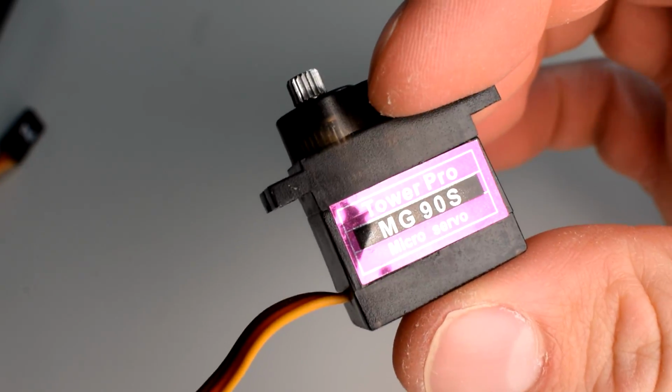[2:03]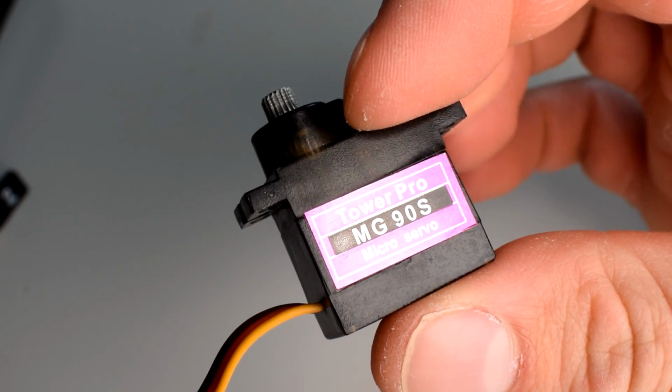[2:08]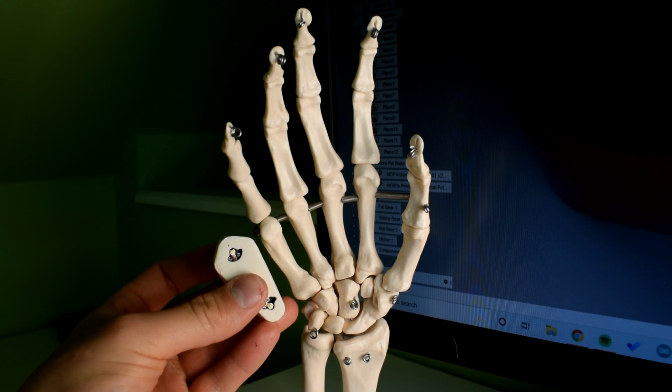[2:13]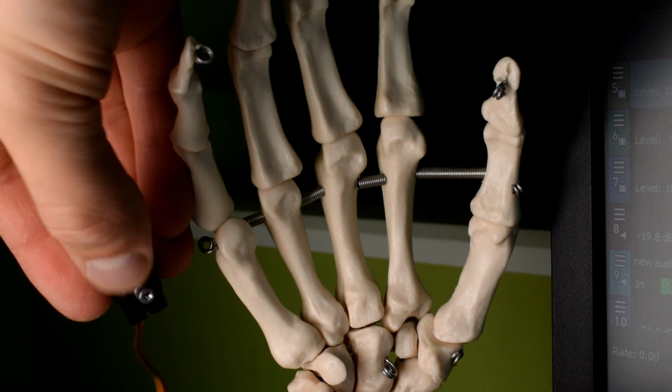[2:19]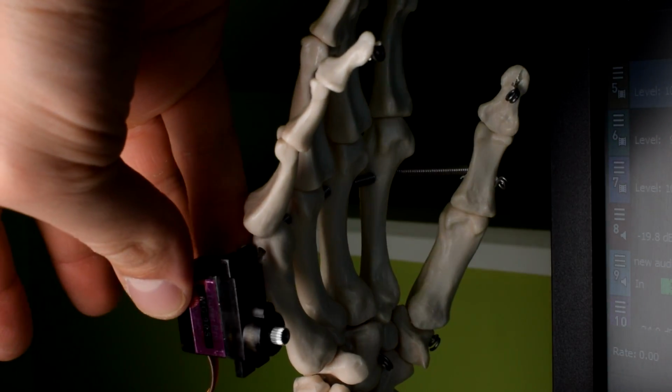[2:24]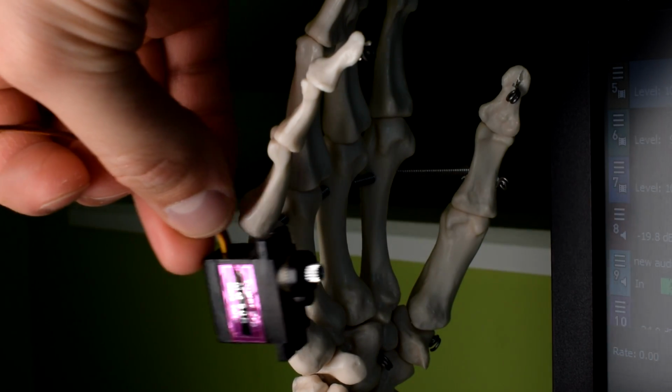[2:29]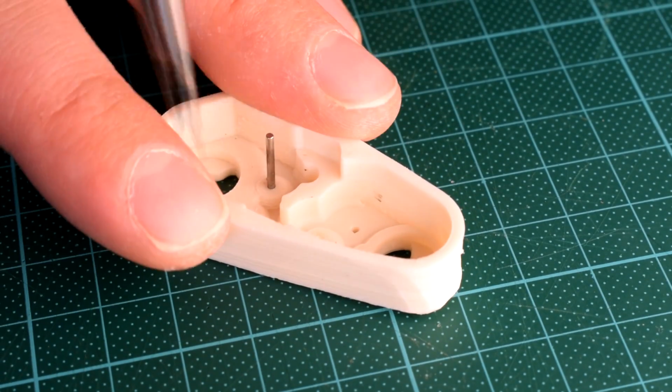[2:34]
Since for this project I'm trying to stick to MG90S servos, since they're so cheap and accessible and I don't really feel bad when I break one of them, I focused on trying to redesign the servo itself to be a flatter form factor and form the structure of the metacarpals in the hand. So I could have just directly put MG90S servos into the palm of the hand, but they wouldn't have been thin enough, despite the fact that the servos are really well designed and really compact. They are just a little bit too tall for what would be ideal, so I decided to try and integrate them into the palm of the hand by changing the arrangement of the gears.
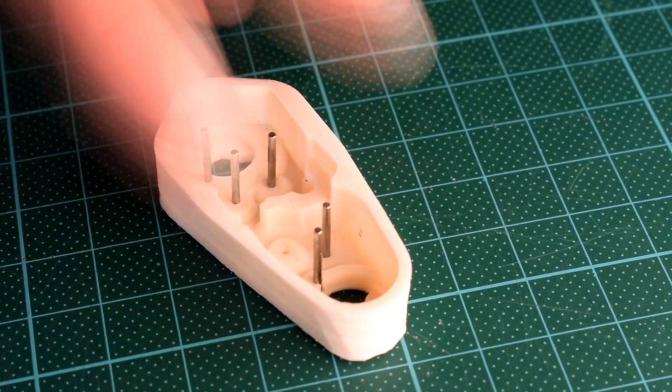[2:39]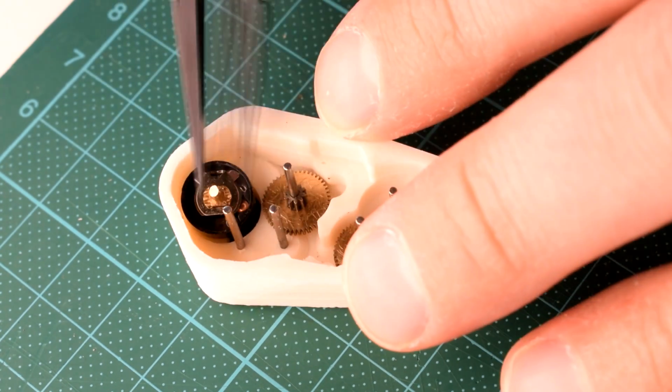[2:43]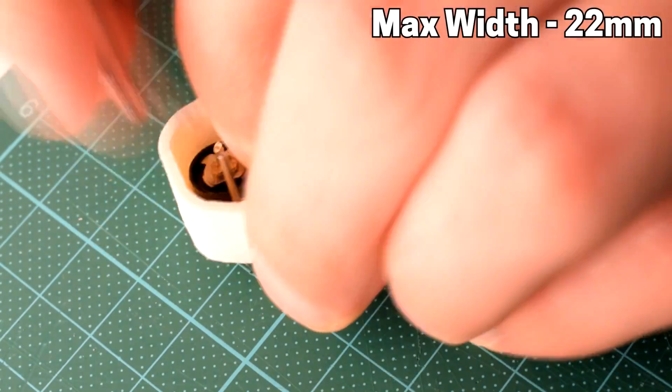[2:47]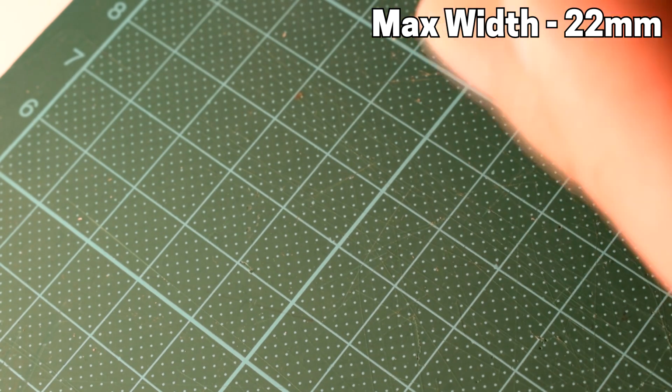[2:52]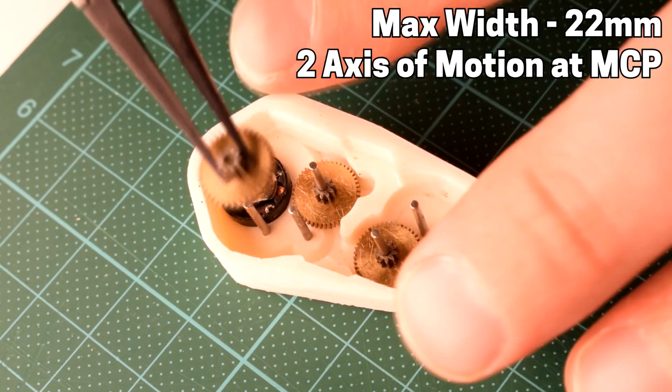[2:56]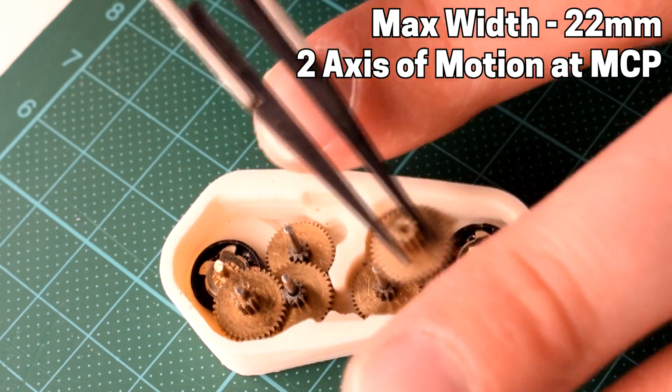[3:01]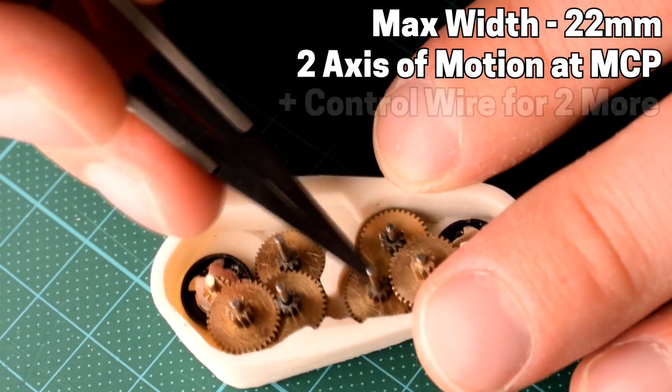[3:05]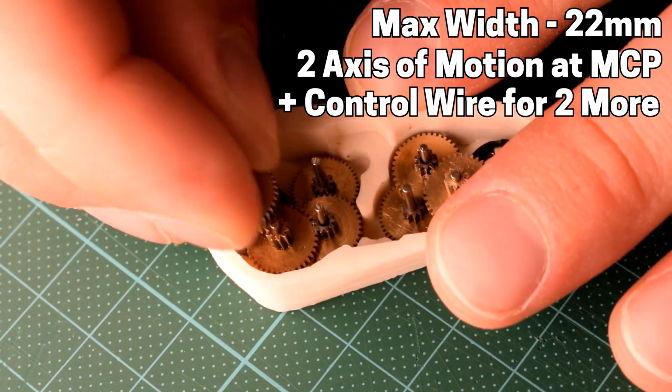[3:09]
So here are my limitations for this design. I had super limited space and I didn't really want to go wider than about 22 millimeters in order to keep the width of the hand and the palm as low as possible. And in this joint space there has to be 2 axes of motion, which is the lateral side to side as I mentioned, and also the flexion and extension, but it also needs to carry control wire for 2 additional degrees of freedom, which are the joints that I designed in the last video.
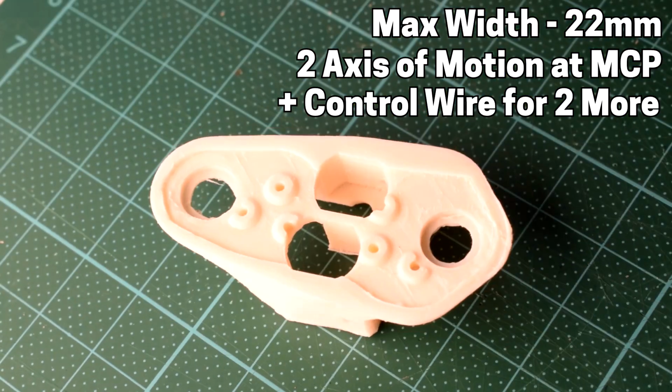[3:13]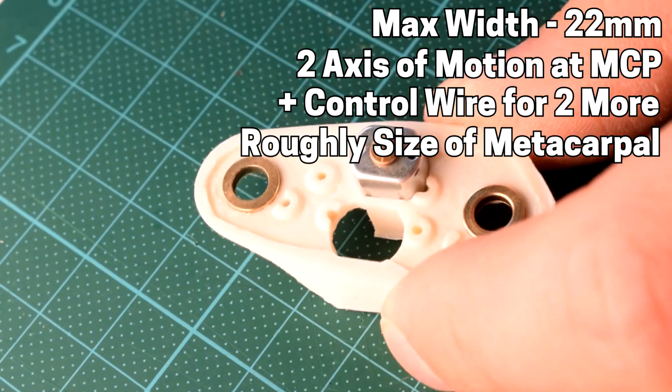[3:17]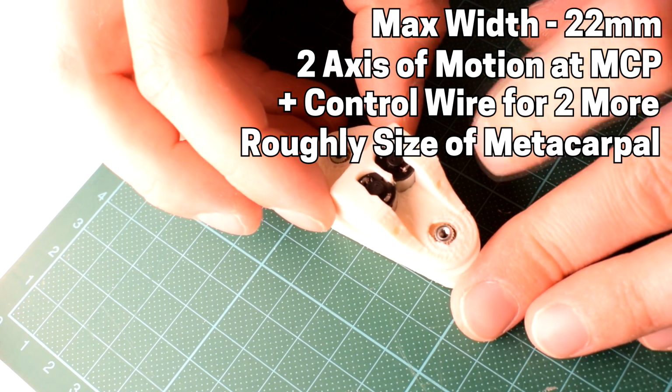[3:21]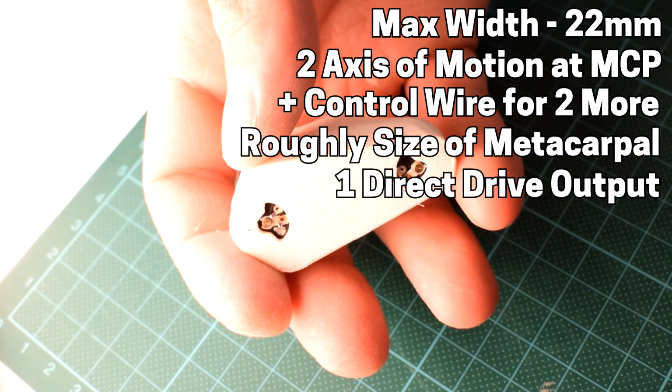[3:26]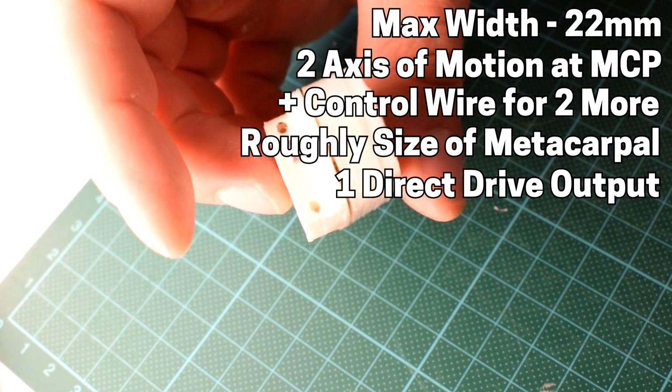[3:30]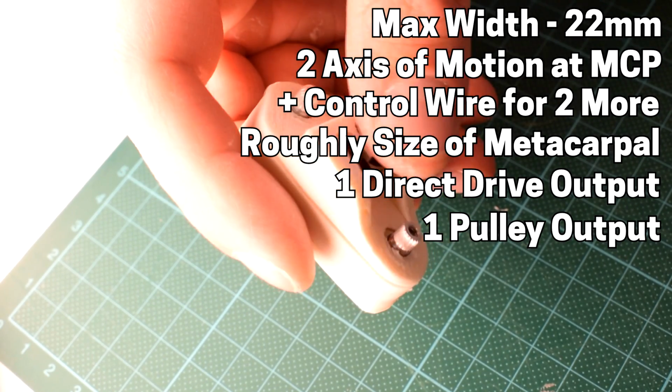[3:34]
And then the overall actuator that I'm designing, I would like it to be roughly the size of the metacarpal bones in a real hand, according to my hand model and my own hand that I'm using as reference. The actuator needs to have 1 output for a direct drive to the lateral motion of the finger, and another output which drives a pulley, which is going to drive another joint via a cable actuation system.
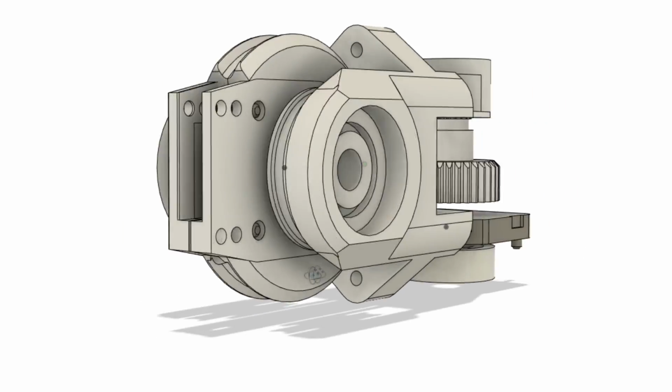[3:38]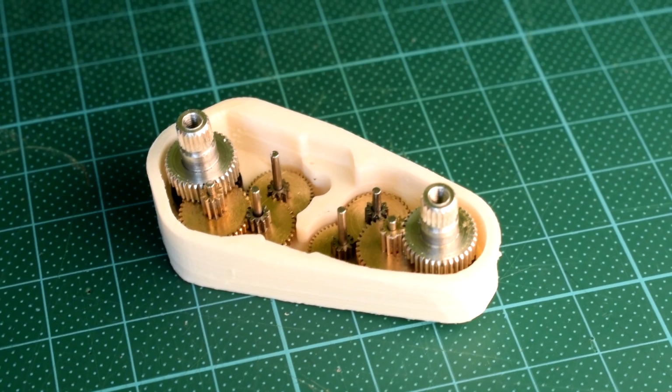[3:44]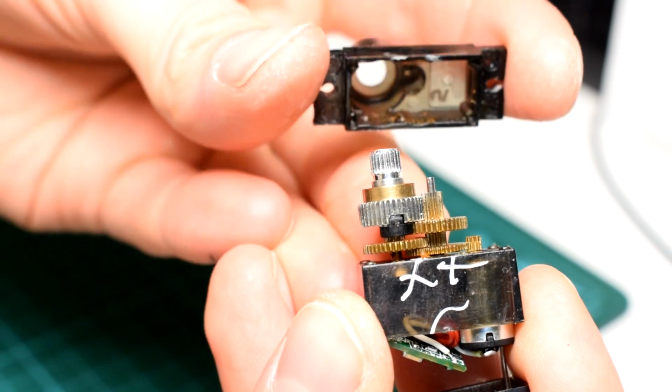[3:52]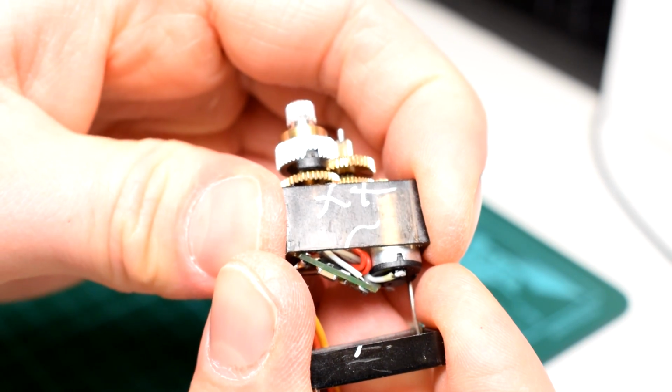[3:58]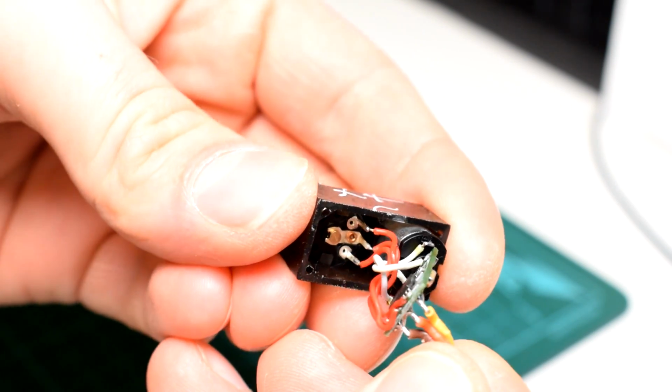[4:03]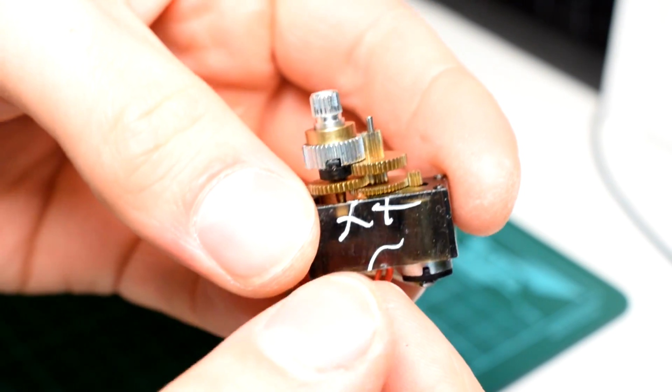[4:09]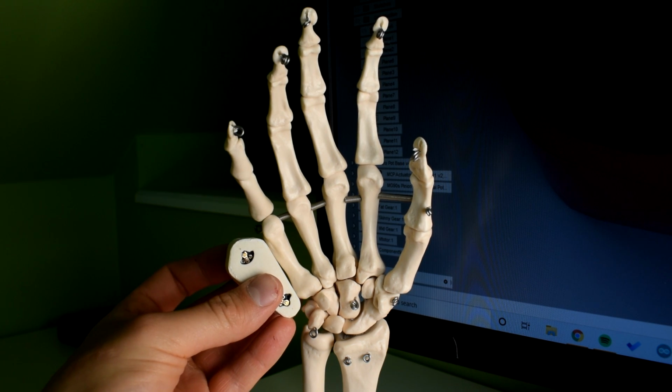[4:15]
So I had quite a few initial designs before I came to this final design. Some of my initial designs had a straight line gear train, but by arranging them side by side I was able to make the metacarpal component shorter. So note that in the original MG90S servo there are only 2 pivot points and the gear train alternates between the 2 pivot points. This configuration is really nice and space efficient, but it is also the reason that the motor has to go on the bottom, which adds a lot of height to the design. This makes sense for the MG90S because this additional height makes room for the circuit board, but in my design I need to minimise height as much as possible as these components will be forming my palm.
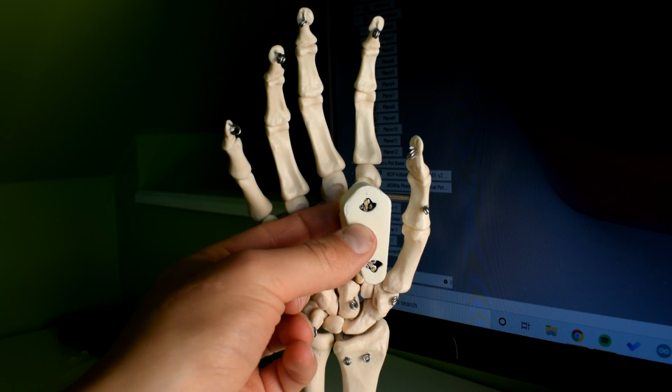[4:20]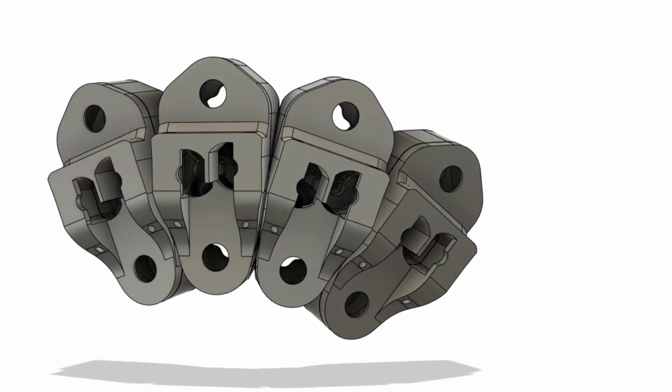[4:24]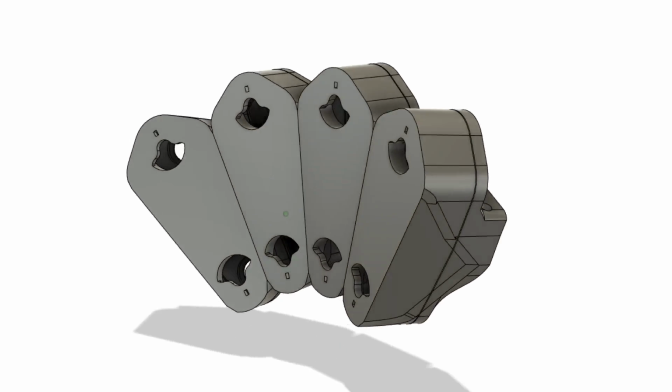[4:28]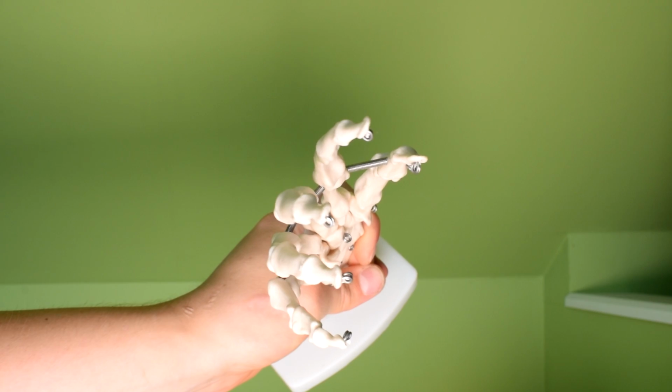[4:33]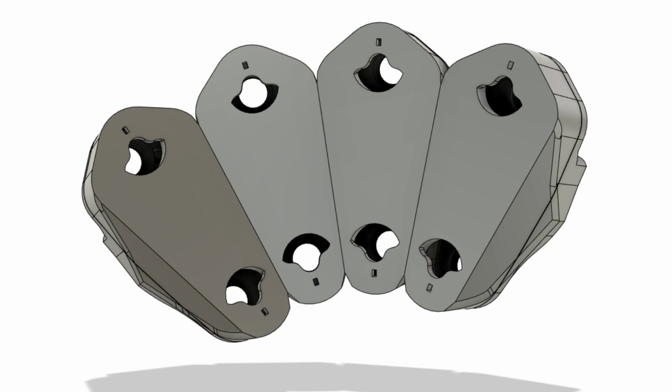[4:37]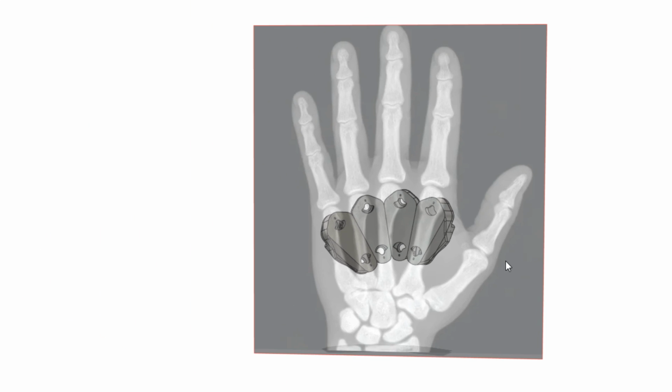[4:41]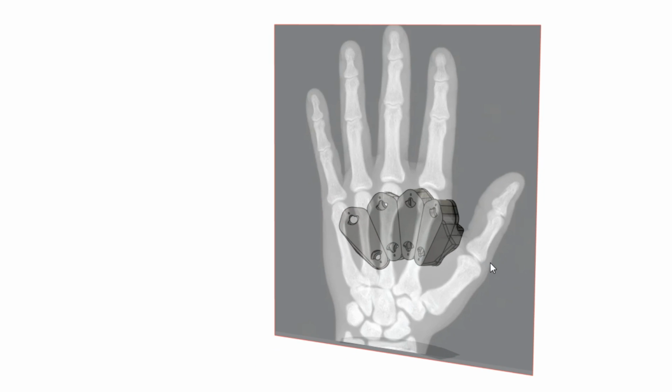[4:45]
The outer walls of the design are angled inwards in such a way that when all 4 of them connect they face inwards slightly. This is similar to the arrangement in a real hand and makes all the fingers naturally oppose each other very slightly. I also now have plenty of space to design a system for the thumb, which is a very complex joint and motion. The next step will be to design a component to link the phalanges to this actuator, which also needs to serve as the other axis of rotation.
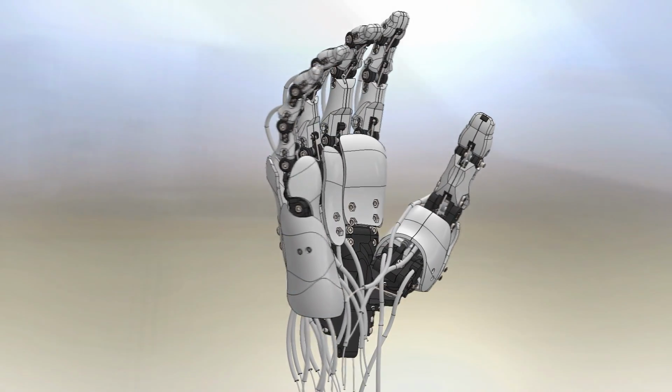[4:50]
I also need to design a component to link these actuators together, as well as connect them to the rest of the hand.
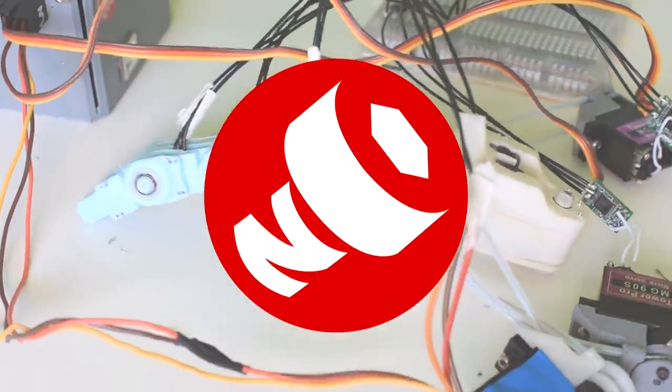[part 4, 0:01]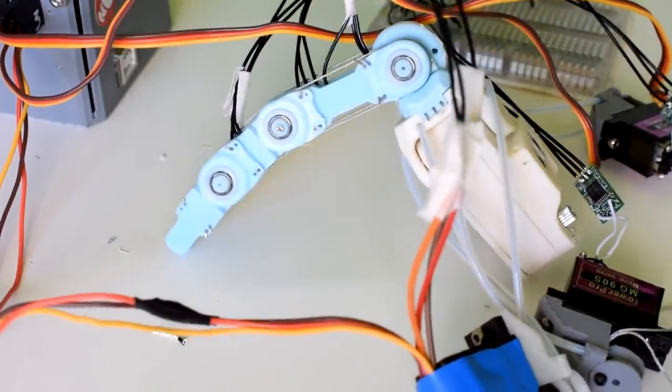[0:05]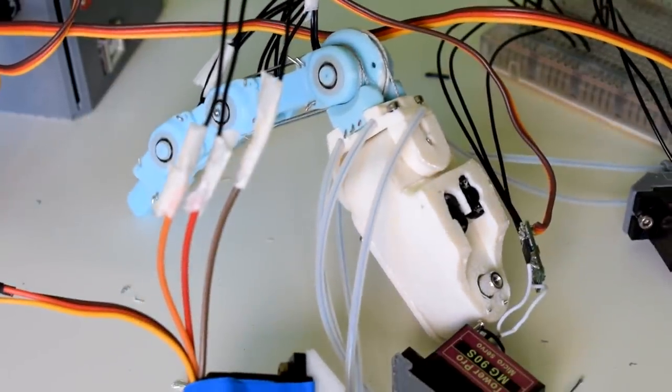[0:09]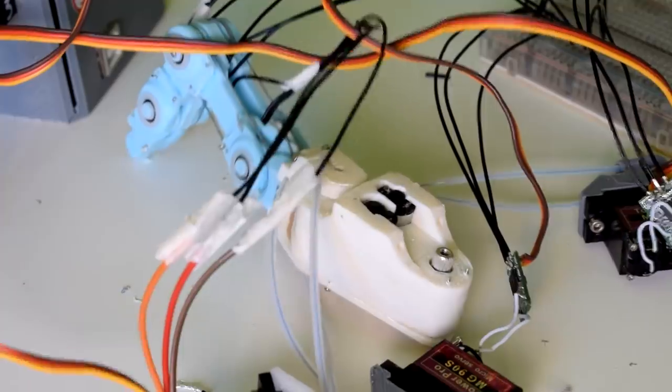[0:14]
I've recently had the chance to test out a chain of my interphalangeal joints, as well as a modified version I made for the MCP joint. So this is going to give me the opportunity to go into a little bit more detail on the joint and show how it all goes together.
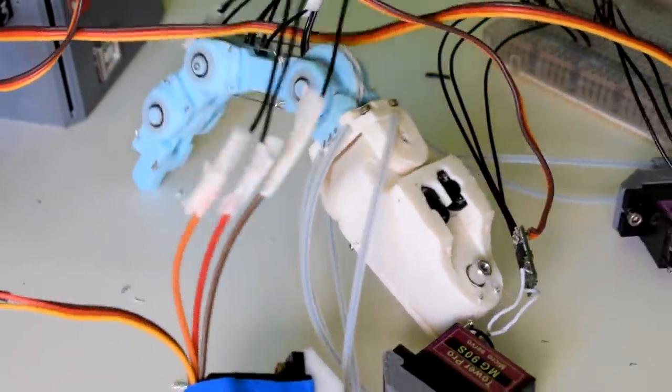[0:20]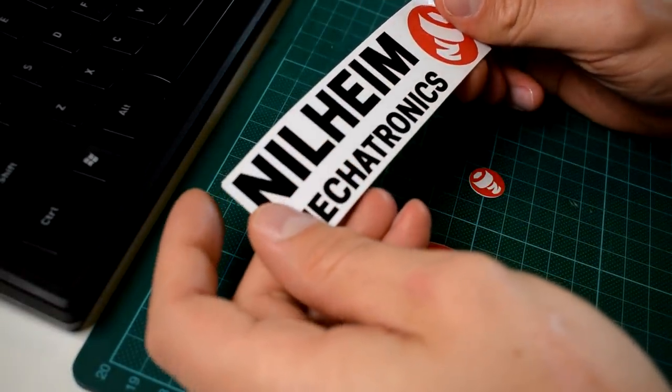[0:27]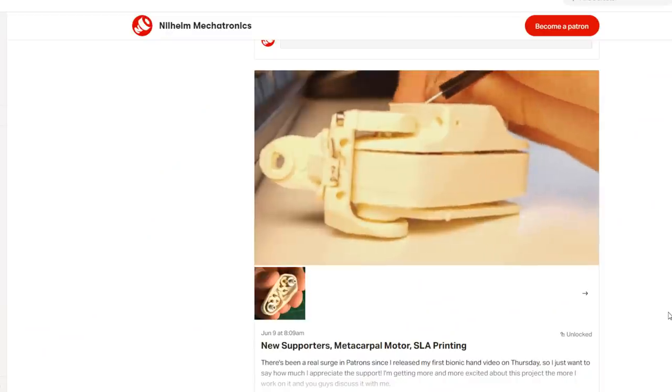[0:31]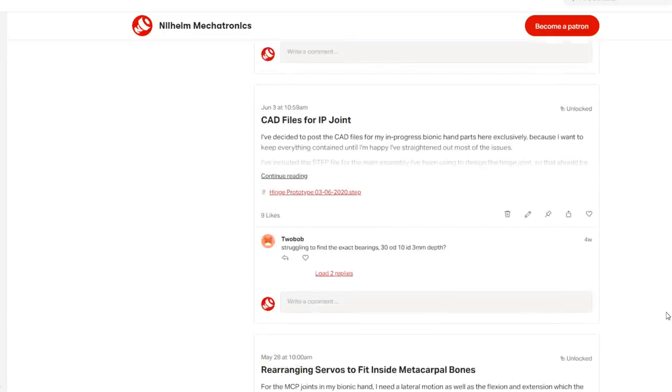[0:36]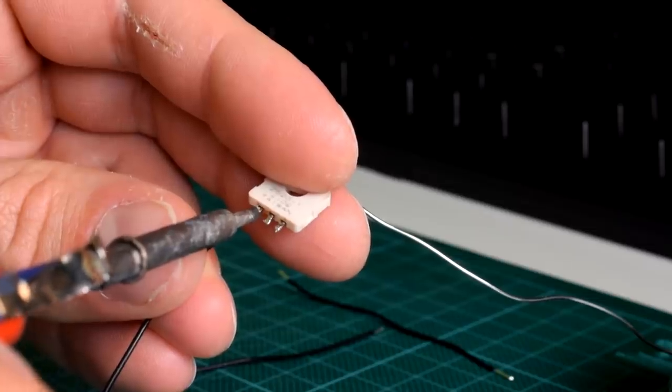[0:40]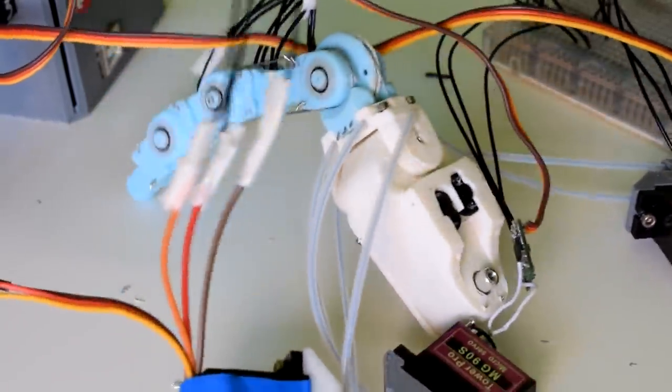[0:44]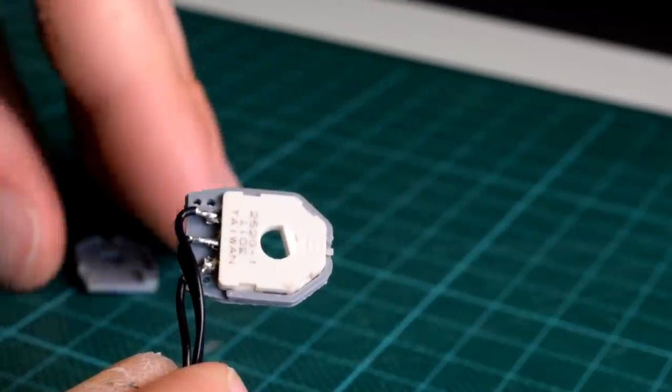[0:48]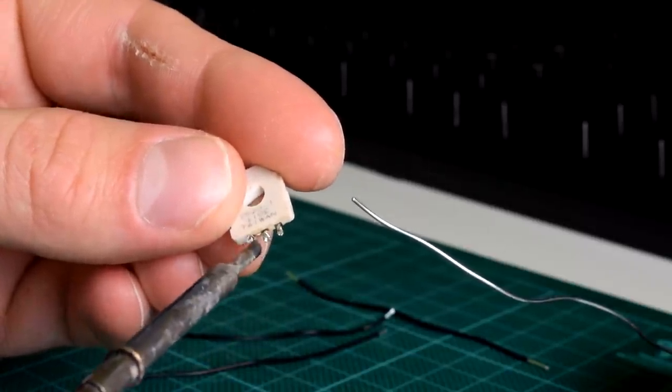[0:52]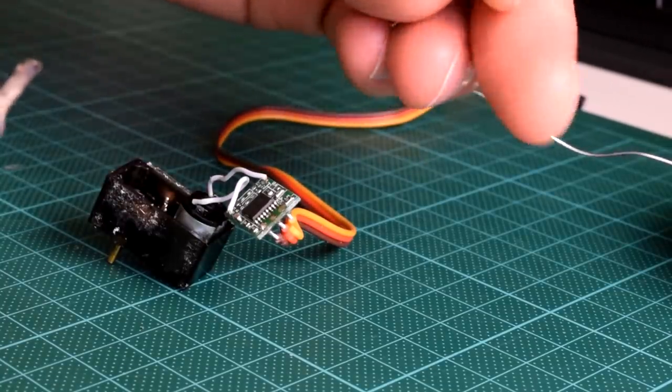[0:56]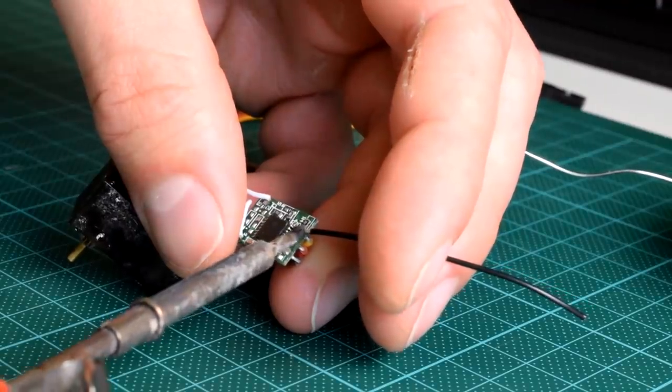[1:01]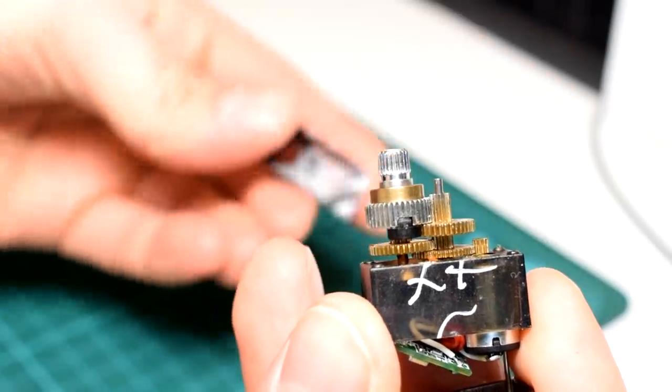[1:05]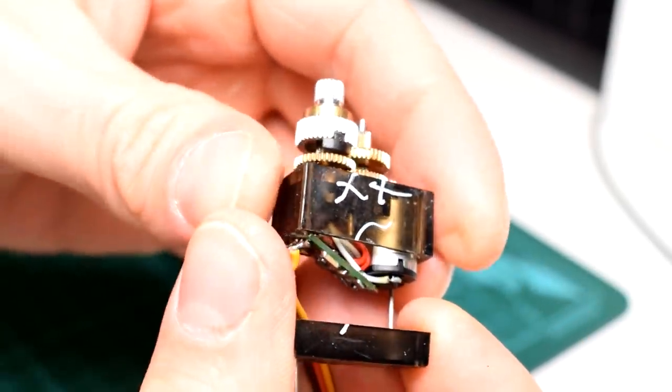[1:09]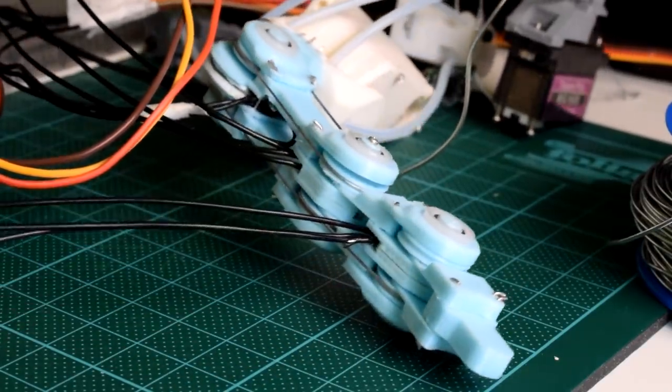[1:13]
So the way this prototype works is that there's a sensor in each joint of this finger model, which is a very slim rotary potentiometer. In this current design, the potentiometer is wired into the circuit board of a standard MG90S servo in the place of its original sensor. So this means that instead of the servo checking the position of its final gear to work out its own position, it checks the actual joint angle in the finger, which eliminates a ton of accuracy issues that my original design had.
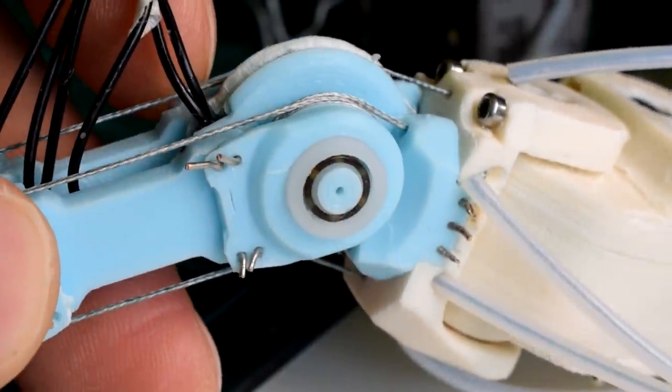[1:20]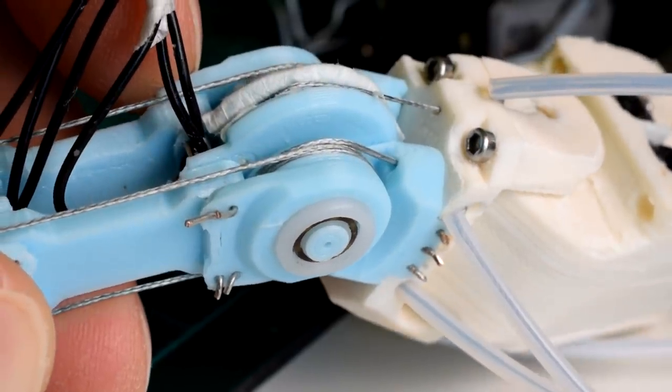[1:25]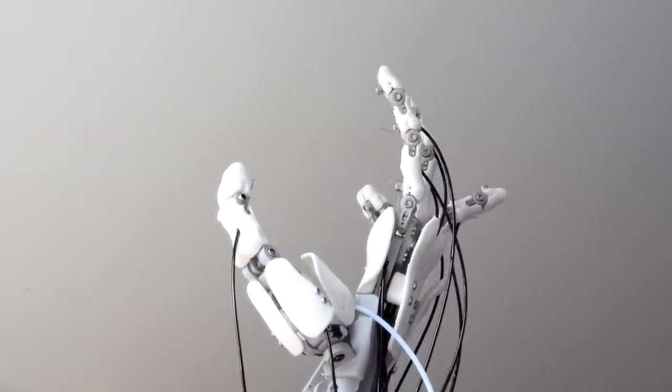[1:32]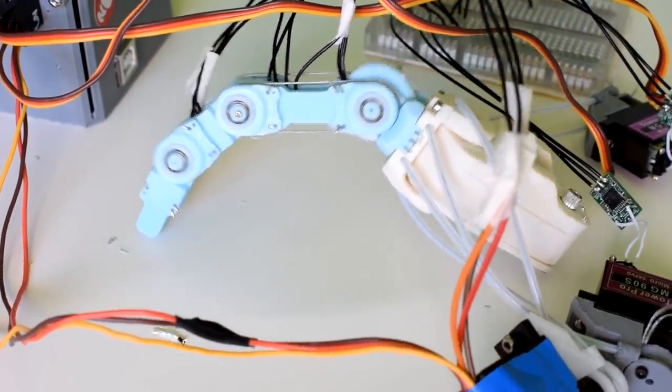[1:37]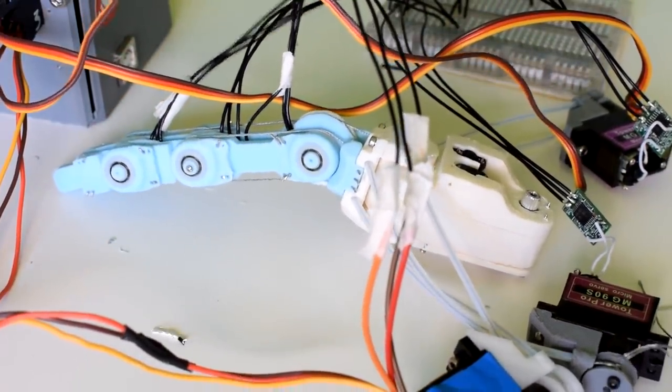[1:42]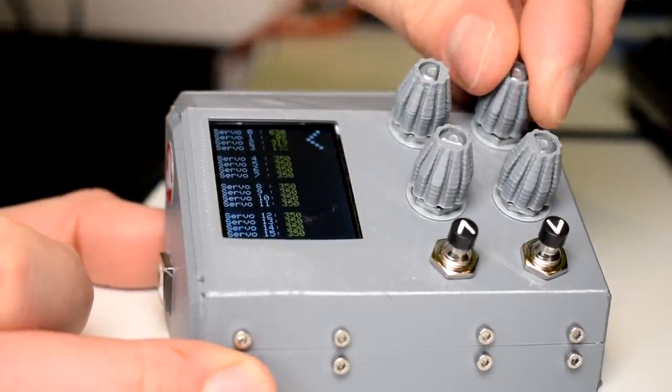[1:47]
The actual actuation of the joints is achieved with control wire running through PTFE tubing, and a pulley system transfers the control wire throughout the whole finger without having to have tubing entering each finger segment like the original design had. This will mean that I can have a much greater proportion of the control wire in fixed, inflexible channels, which should help to reduce the excessive wiggle room that the original design had. In this prototype, I'm testing the motion just by twiddling knobs on my servo tester that I made a few videos back, but I think that the motion looks pretty natural even at that.
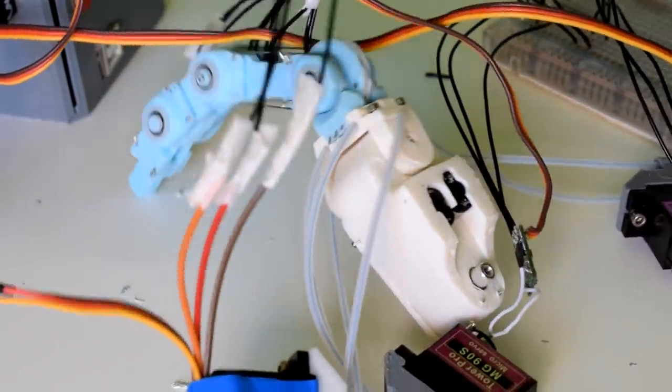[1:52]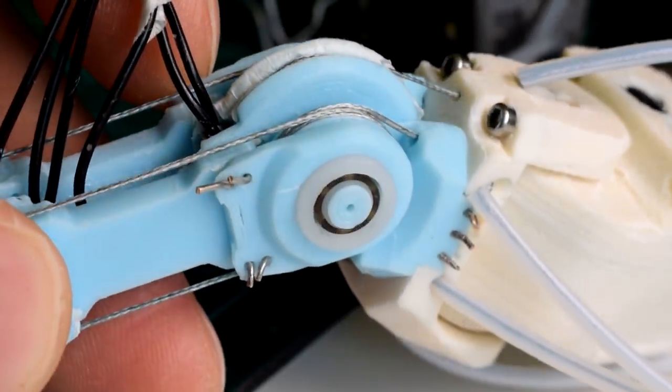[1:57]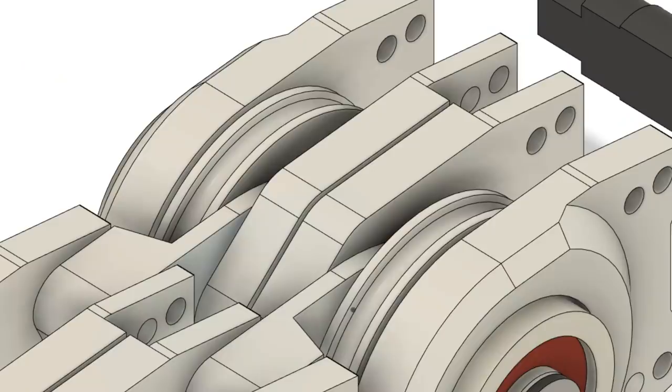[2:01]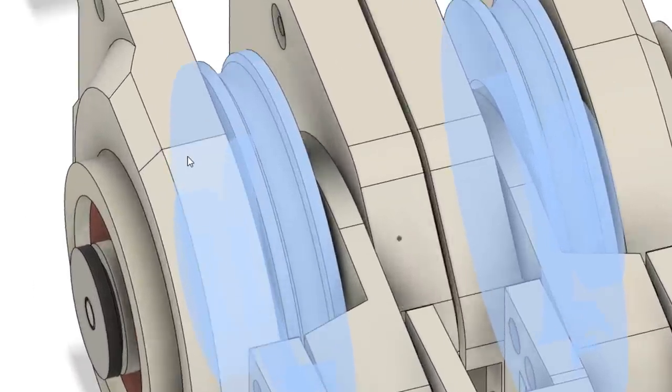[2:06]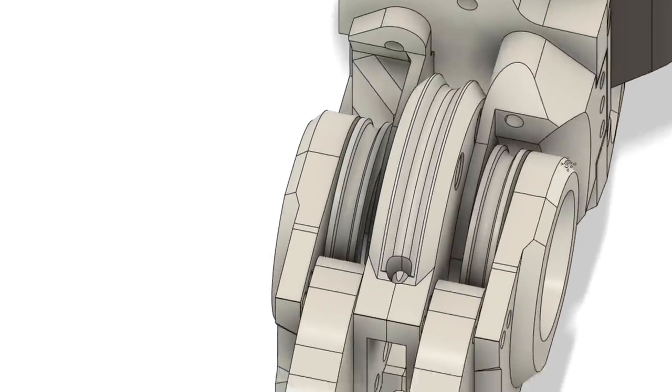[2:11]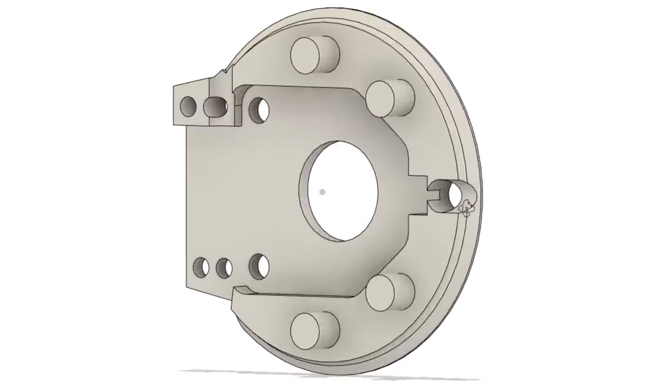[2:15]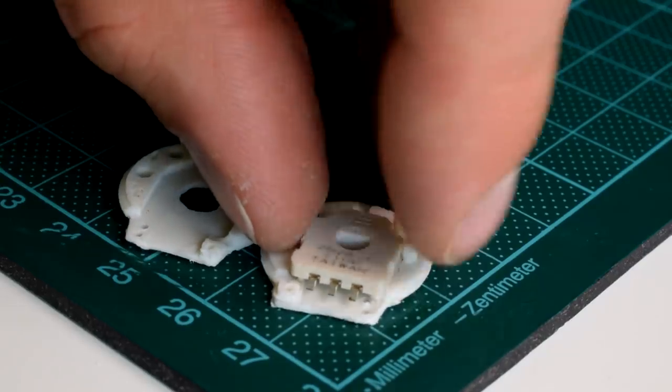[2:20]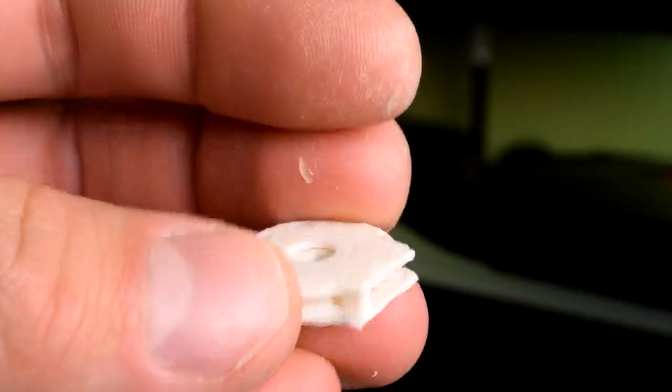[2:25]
So to examine a few of these joints in greater detail, starting at the new MCP flexion joint, I had a unique challenge because of my joint design, which already has two pulleys which carry the control wire for the proximal and distal IP joints. So with the additional space I had due to the MCP joint being a bit fatter, I reshaped the housing for the integrated potentiometer to also function as a pulley, so it goes together in the same way with some little pins to align it, although this does leave a thin gap where the wire should run, so I'm going to redesign it to have a complete pulley surface printed on one of the sides.
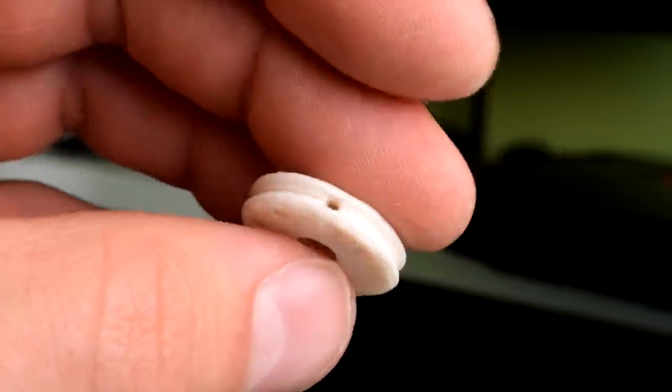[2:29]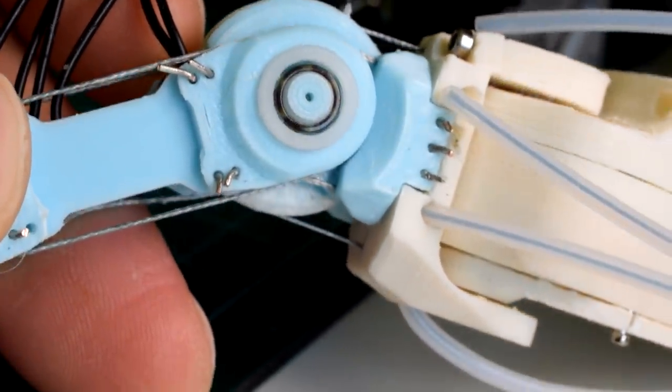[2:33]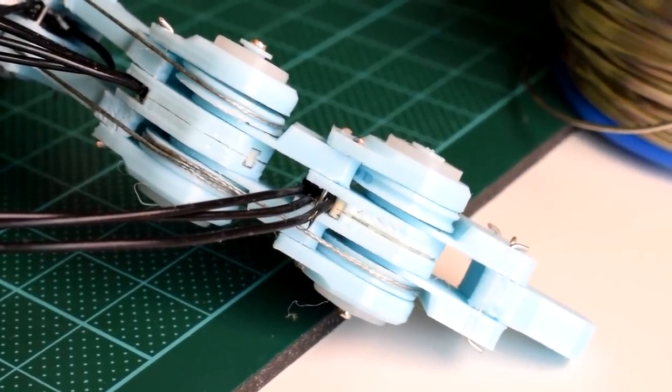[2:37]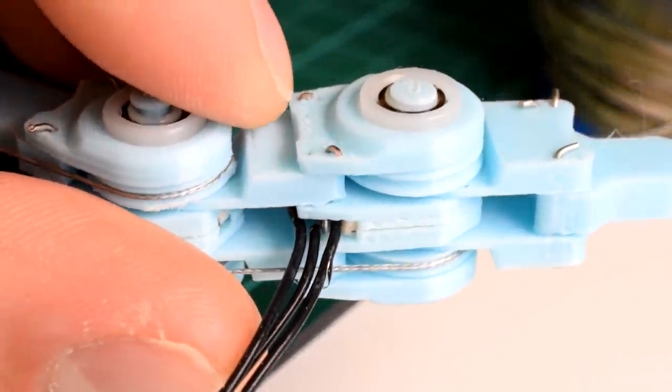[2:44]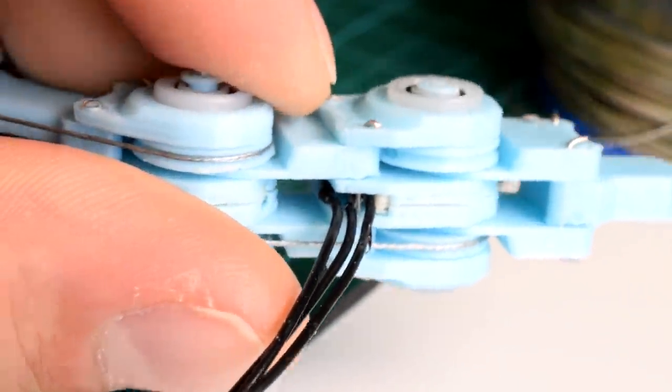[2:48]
So this pulley slash potentiometer combo component connects to an adapter which is part of the MCP joint, but I'm still developing that and I'll be updating you on it soon. So the interphalangeal joints were largely unchanged from the first video, but now that I'm a little bit more comfortable with them, I can show you how they go together. Having said that, it was very fiddly to put together, so the one I'm showing you here is not part of the actual prototype that I built.
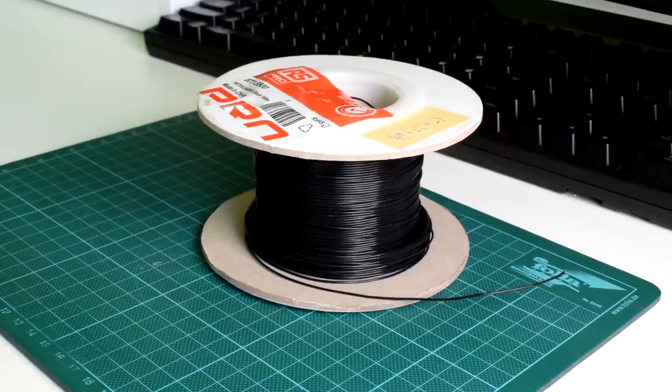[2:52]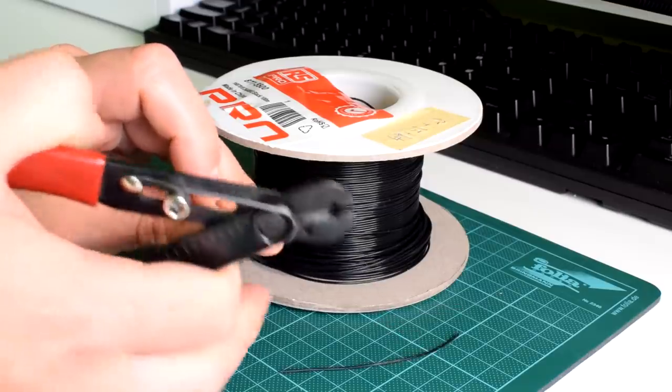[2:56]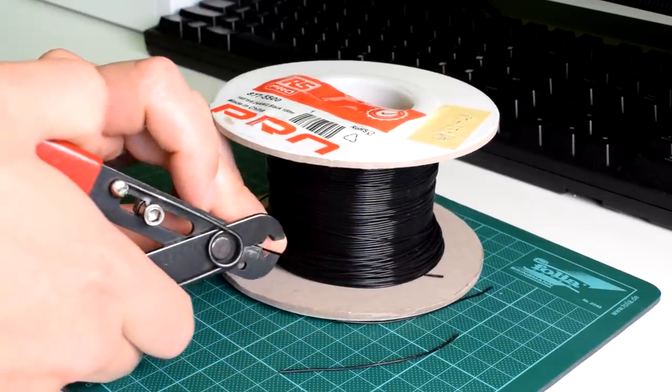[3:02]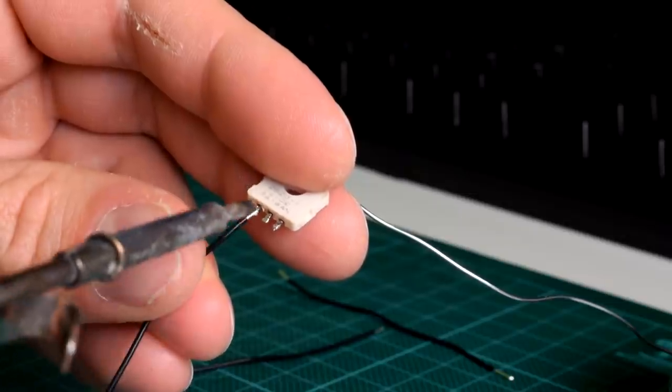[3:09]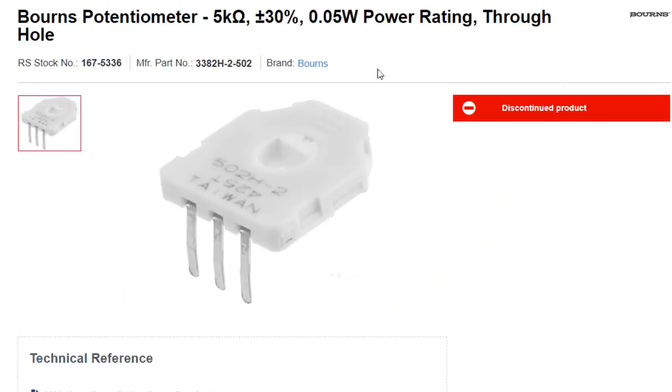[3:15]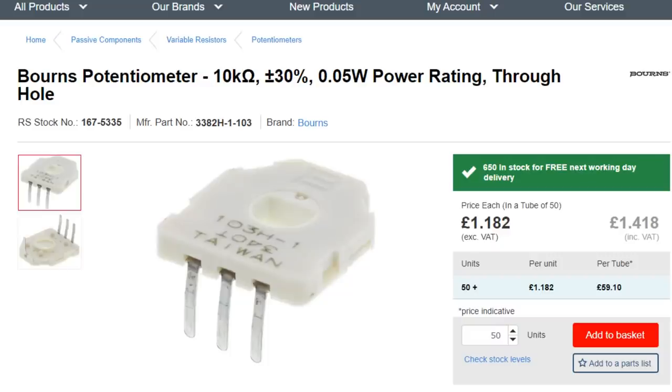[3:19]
So the first task is to solder the rotary sensors, and for that you'll need some really thin wire. The wire I'm using in this video is 24 AWG, but I still think it's a little bit too thick. So the potentiometers that I started out using were the same type of Bourns potentiometer that I used in my control glove, but it looks like there's an updated version on RS now, which has some minor differences. I'll put the product number for both sensors in the description. But it does look like the new ones may be a very slightly better build quality.
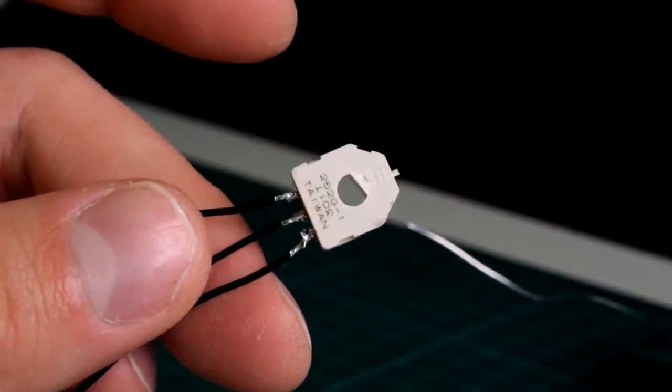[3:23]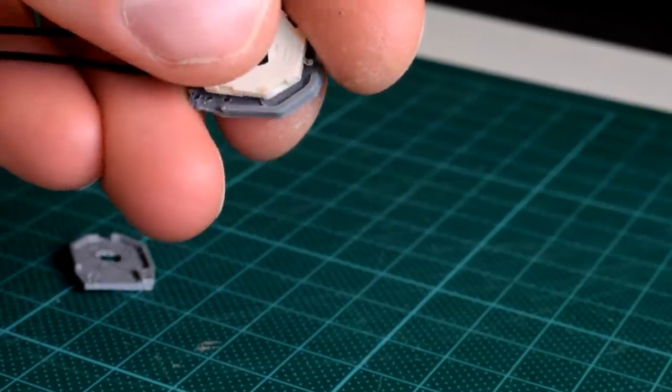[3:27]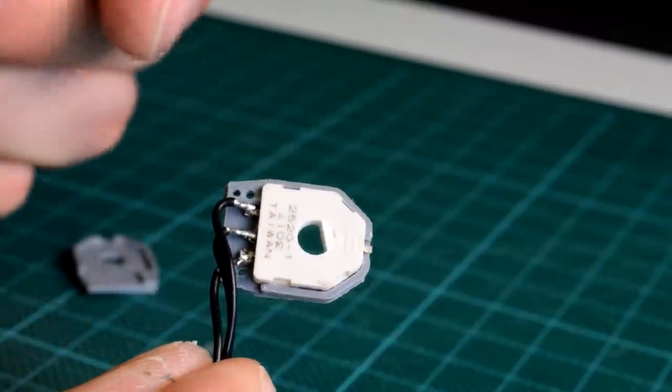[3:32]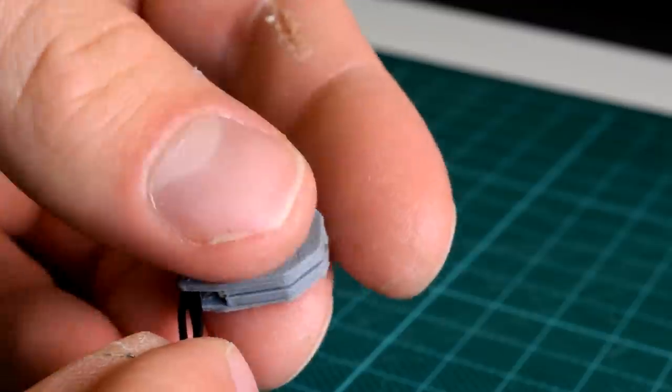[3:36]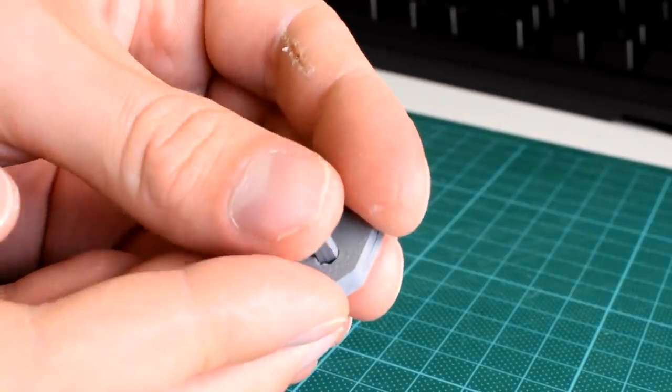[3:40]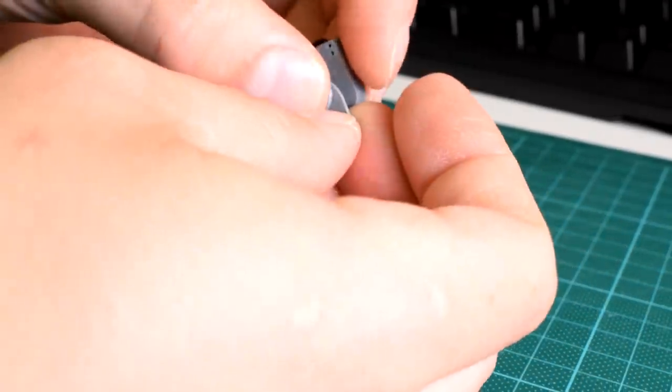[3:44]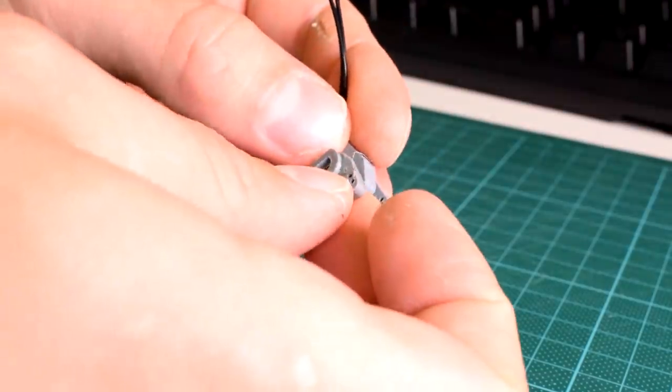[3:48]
So once the potentiometers have been soldered, you can put them in the little potentiometer housing and make sure the wire exits through the open end of the housing. The next layer is the thin connector pieces, so they are really thin, but they're thick enough in the planes that matter for the forces that they're going to experience in flexion or extension of the hand, so I think it's not a problem, especially if it was going to be printed in something a little bit more durable.
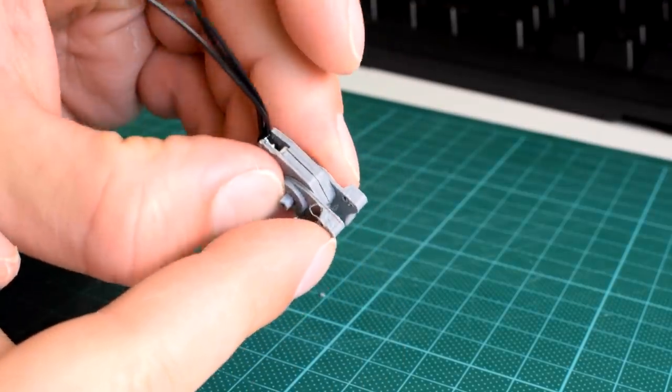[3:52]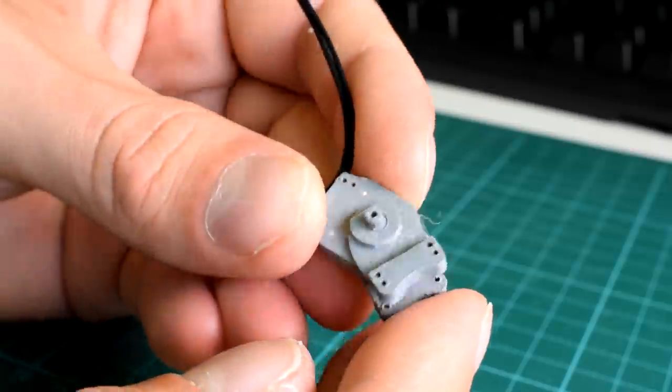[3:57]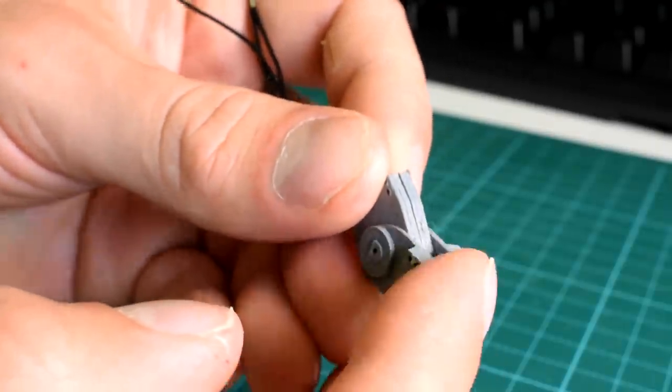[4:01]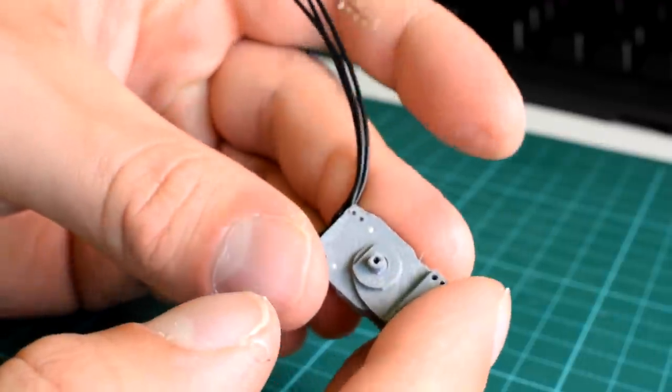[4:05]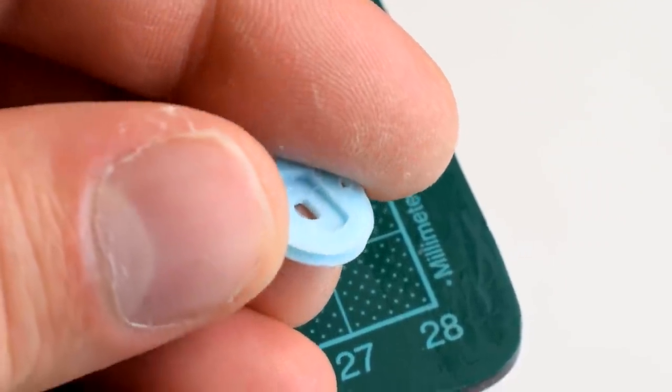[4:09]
But these components also set the position of the potentiometer via a little central rod, which needs to go in at this stage too. This little rod is best printed flat face down, but there is also a screw which will go through the middle and greatly increase its strength. You can then put on the pulleys. One of these will need to be the actuating pulley.
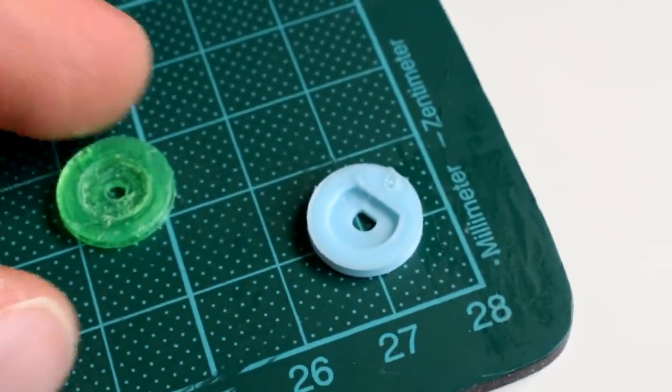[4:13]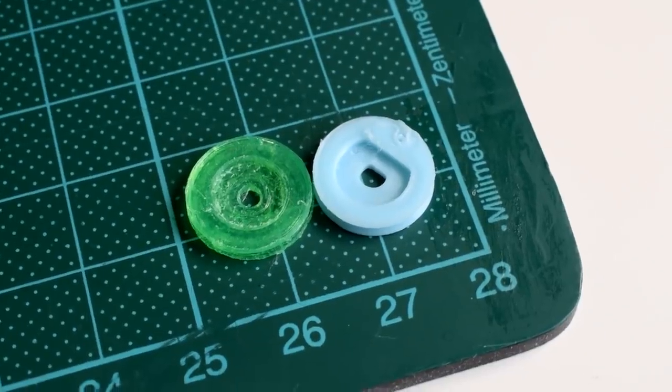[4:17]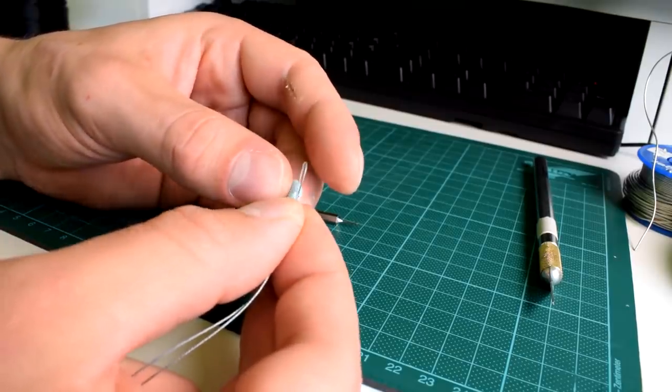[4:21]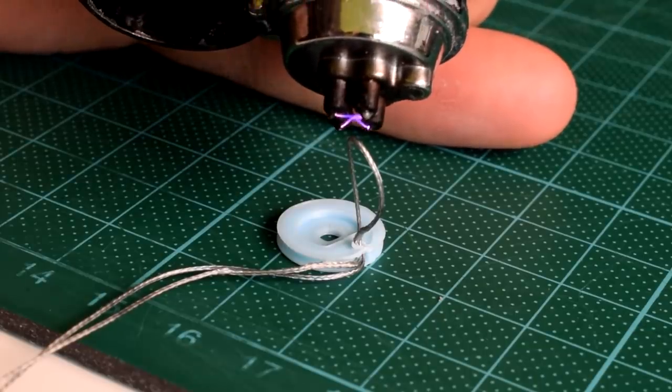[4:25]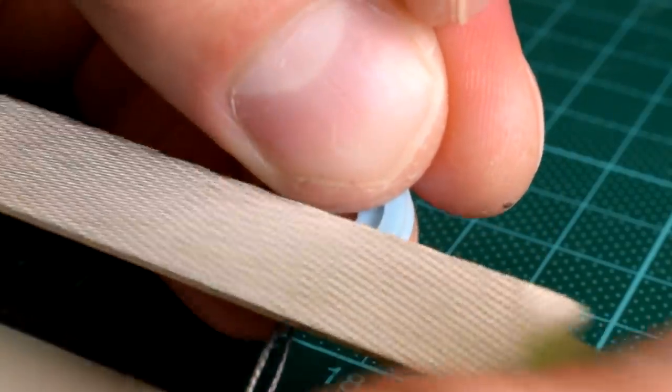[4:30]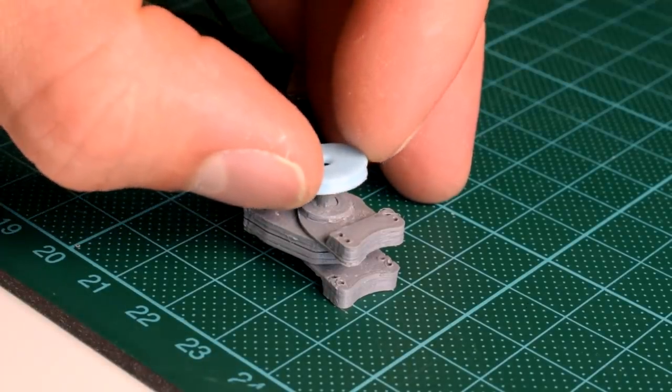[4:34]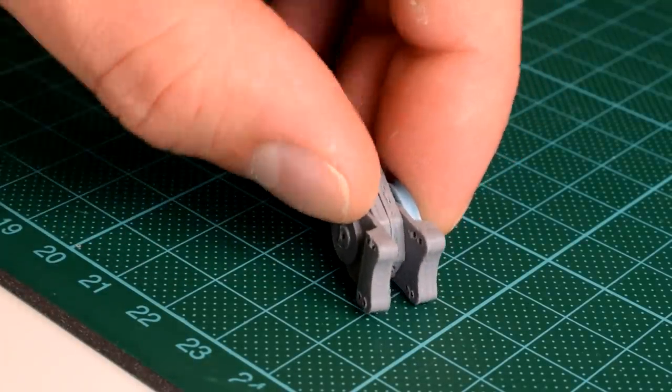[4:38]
The actuating pulleys have a flat face on the inside to transfer the force, whereas the other type of pulley is fully round on the inside and can rotate freely. On the actuating pulley, insert your cable, bend the ends and try to get it as flat as possible. I'm using what I believe is ultra high molecular weight polyethylene fishing line, but I think it's a little bit too thick. It is, however, unbelievably strong, so I think I can quite safely go a lot thinner.
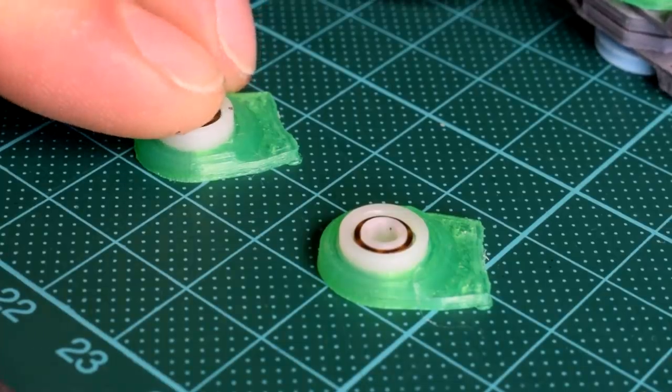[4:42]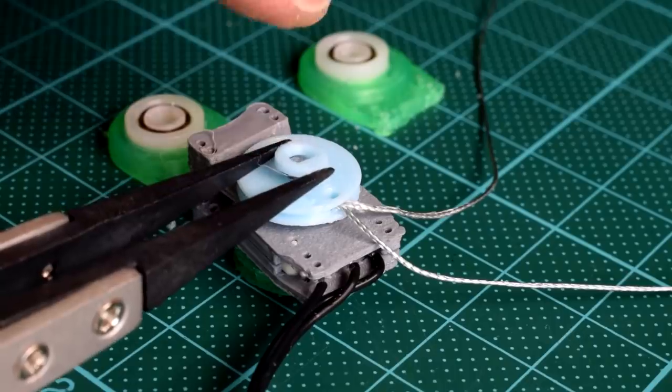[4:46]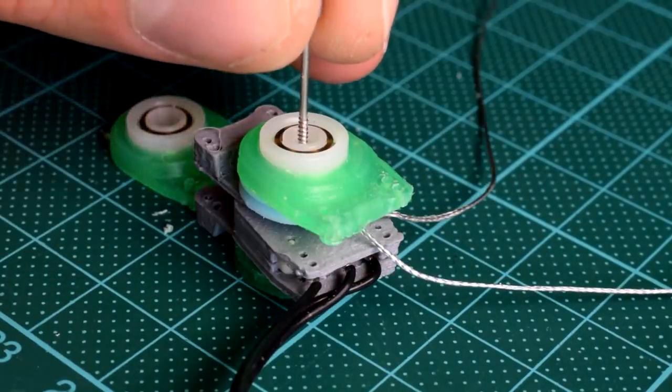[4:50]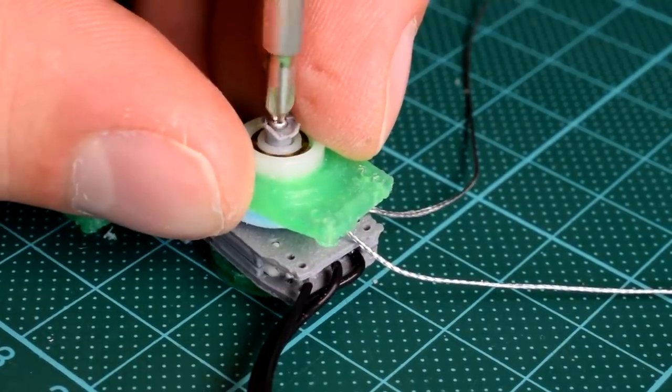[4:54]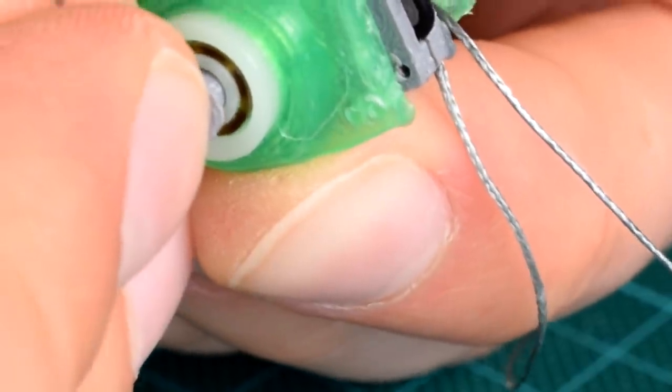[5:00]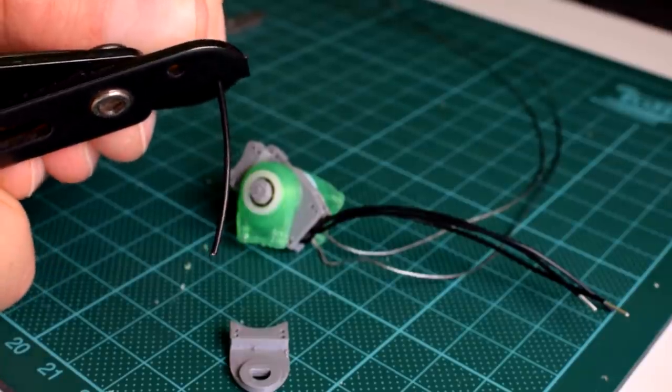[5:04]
You can then put the pulleys on and put the bearings in the bearing holder components. You can then complete the central axis to lock everything together. The screw, which in this instance is an MG90S housing screw, goes straight through the short end and central rod and into the long end component. The reason there's a short and long end is because one half of the central axis component is a little bit longer. And then the final step is to use some half millimeter wire to seal it all together.
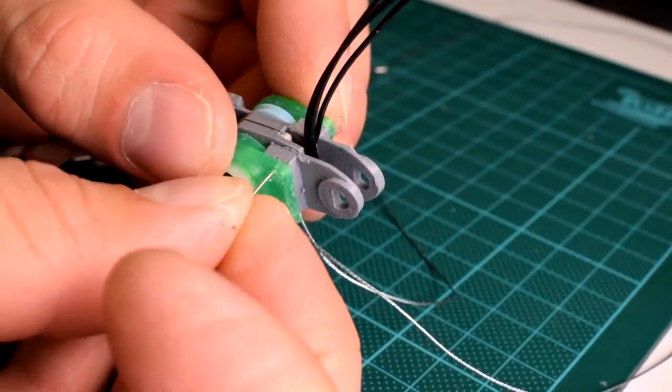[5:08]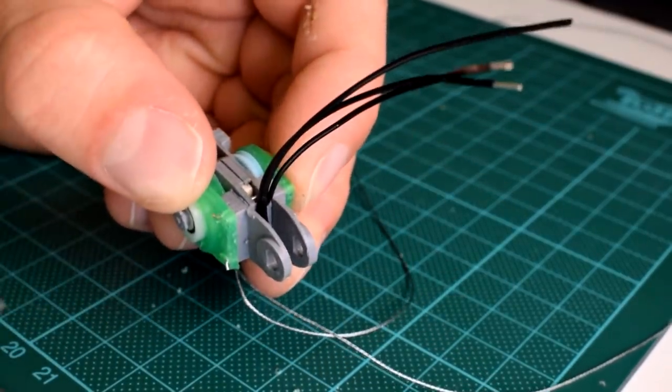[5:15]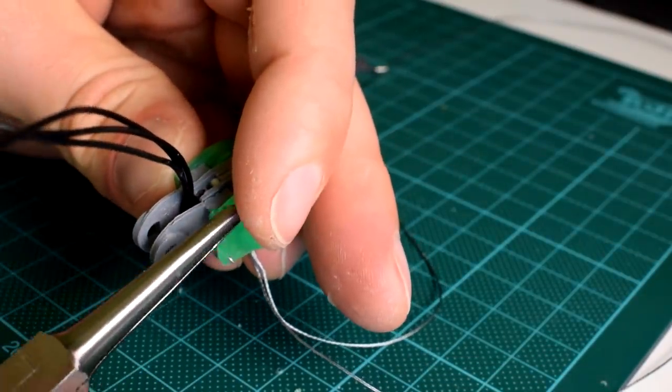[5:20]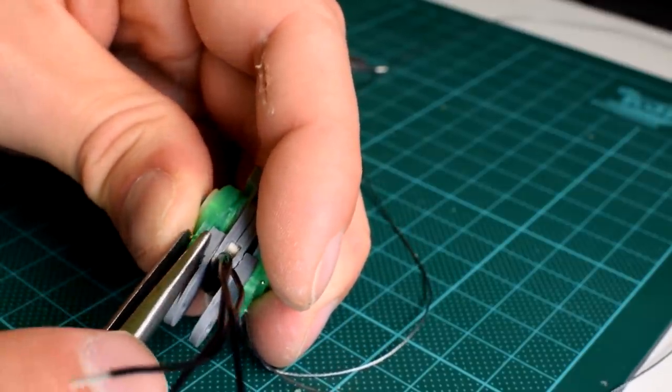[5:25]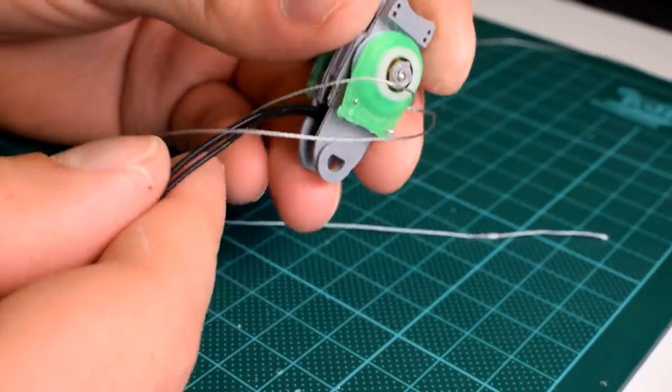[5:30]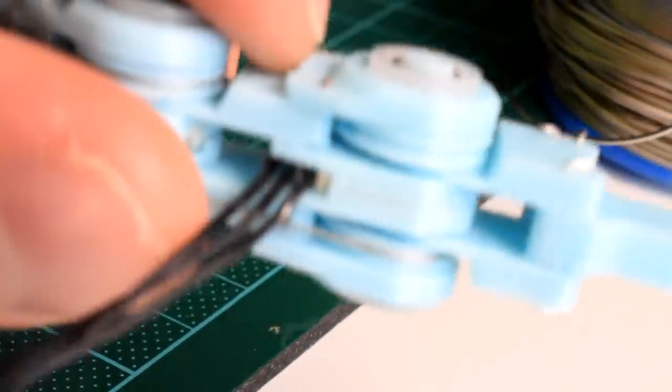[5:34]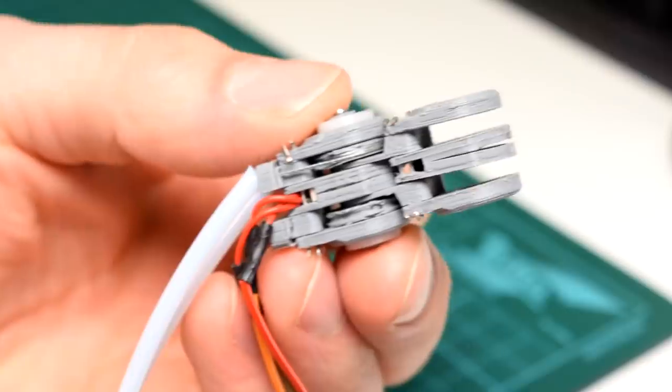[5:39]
I do think that screws would be a better choice, but I need to source some thin enough screws which will keep the weight as low as it is at the minute. And I also do like having the option of using wire, just for those of us who have a very low budget. Having this wire holding everything together is also intended to act as a sort of strain relief for the wires, but annoyingly the control wire from the potentiometers was slightly too thick to fit between the construction wire. So all that means is that I need to find some thinner, more suitable wire, because in my original prototype that wasn't actually an issue because the wire was thin enough.
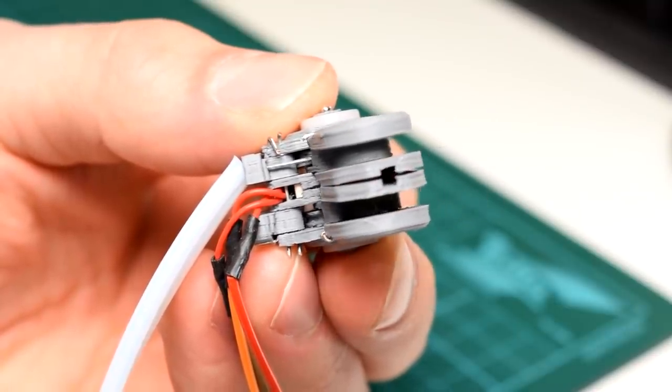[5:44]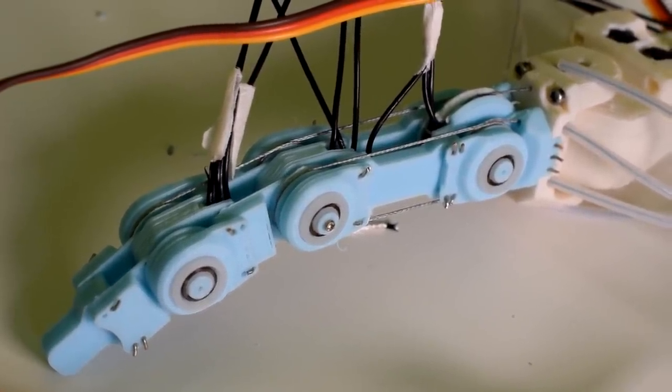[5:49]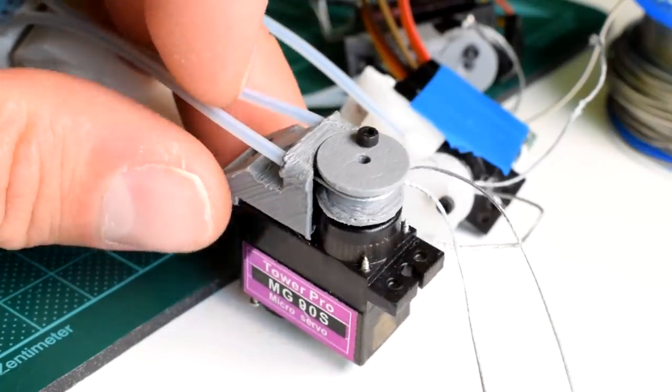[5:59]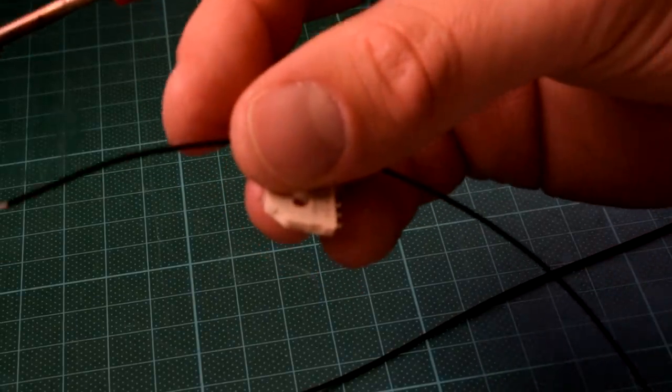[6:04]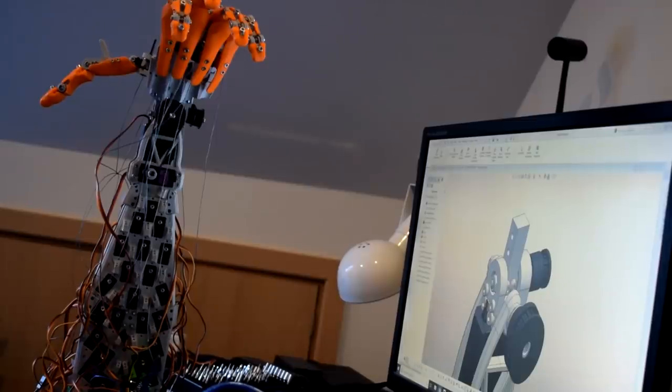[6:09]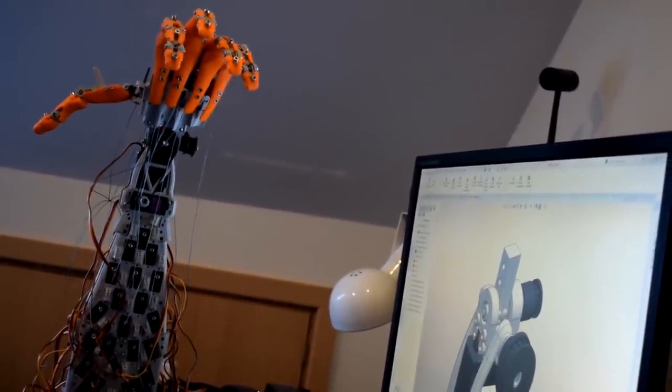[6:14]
And then the rest of the finger segments go together in the exact same way, although it should be noted that the proximal phalanx, which is the first finger segment, has bearings and potentiometers on both ends, so it's like a double-ended segment. So at the moment, to test out this prototype, I'm just using rewired MG90S servos, but I would like to use the MCP actuator to drive at least one of the joint segments, and I'm not sure how the actuators will look when they're integrated into the forearm in the final thing. By which I mean, I'm not sure if I'm going to rearrange the servos again to fit them better in the forearm, or just stick with the standard form factor.
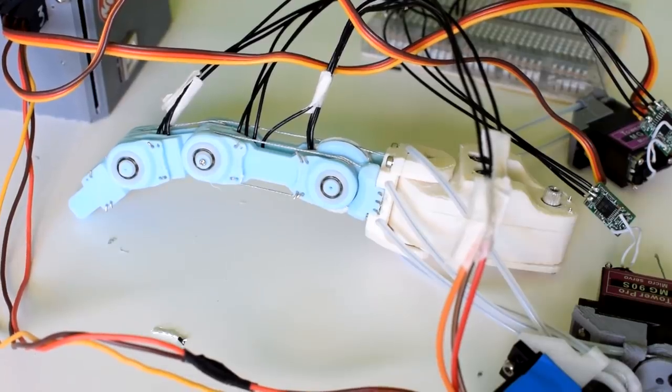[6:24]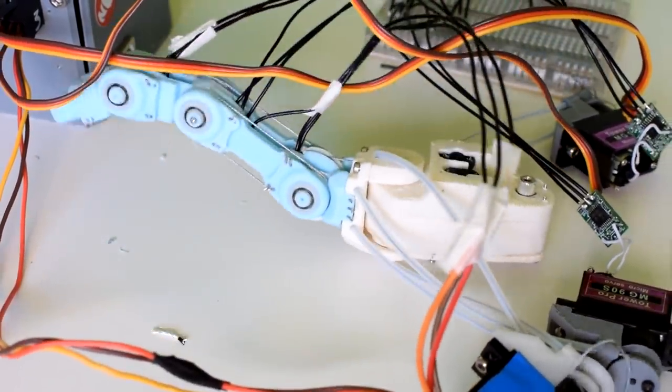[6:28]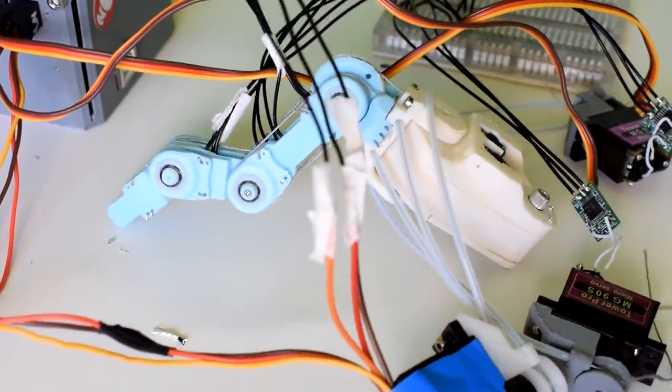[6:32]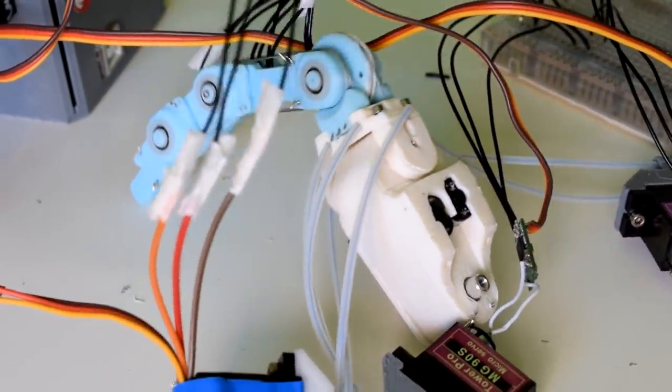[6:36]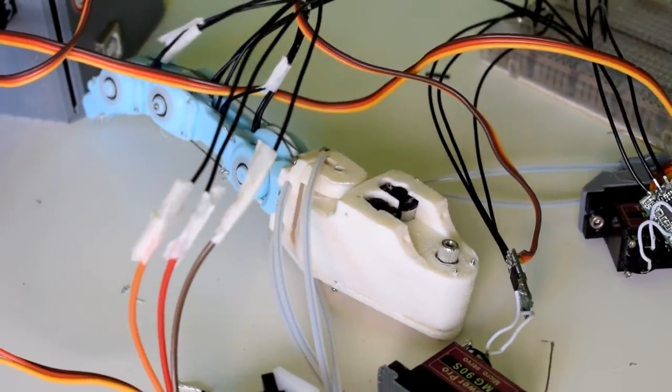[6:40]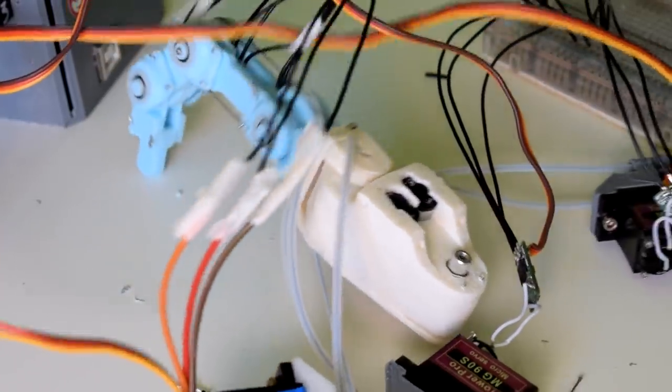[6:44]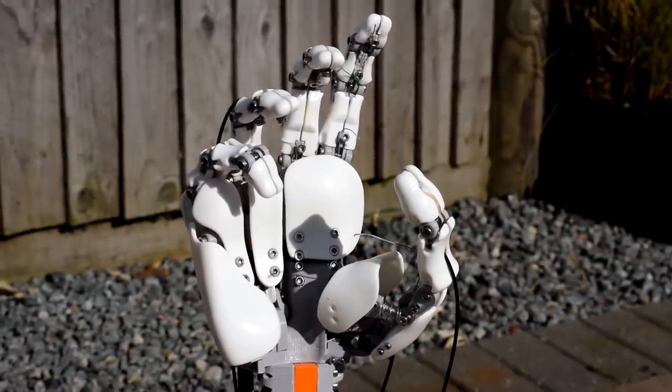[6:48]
I do think this has been a successful experiment, and it's nice to see something with a few degrees of freedom like this working, but there's still a lot of room for improvement on this design, I think, like thinner control wire as I mentioned, the pulleys need to be able to turn a bit smoother, I would say, and I need some kind of cable management system for this design, although I do think that can be something that will be integrated into the shell components, however I decide to build those.
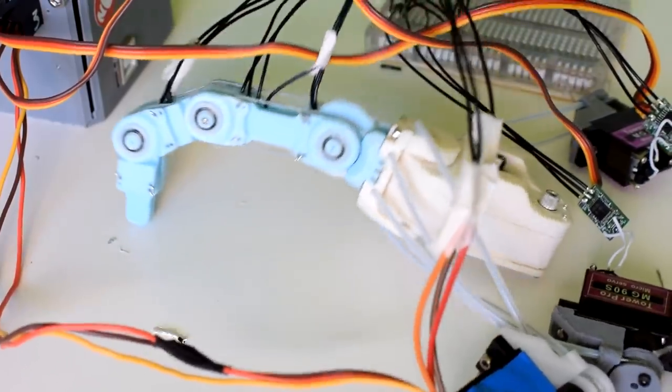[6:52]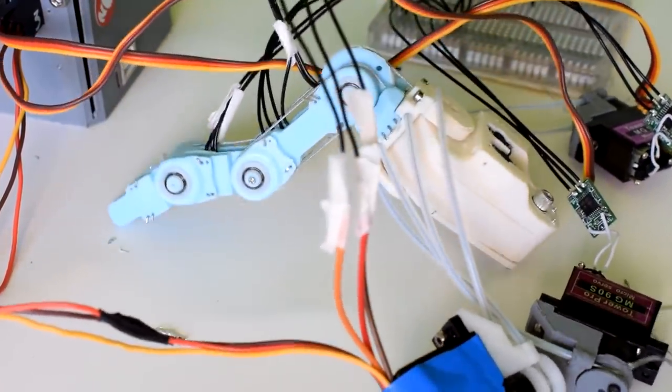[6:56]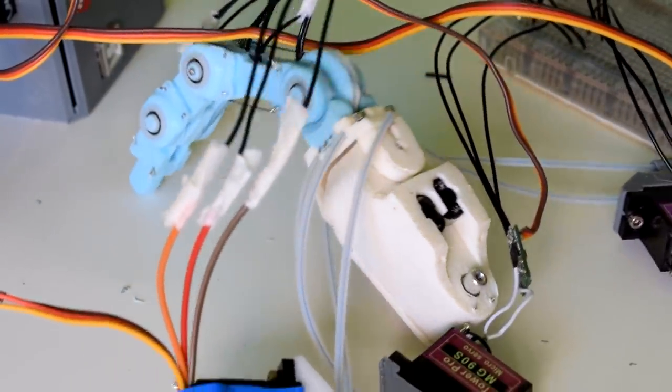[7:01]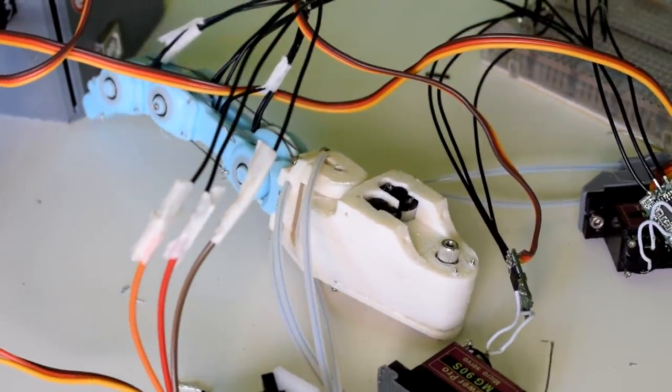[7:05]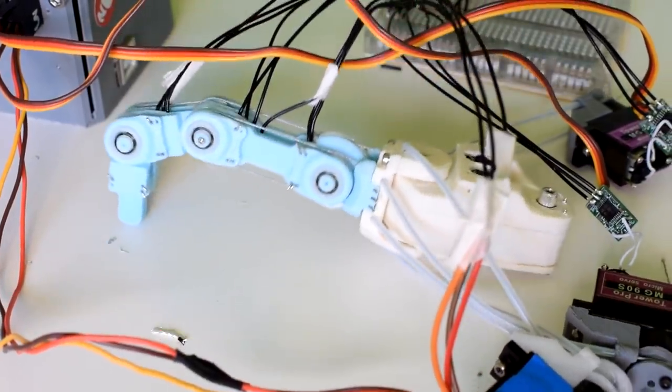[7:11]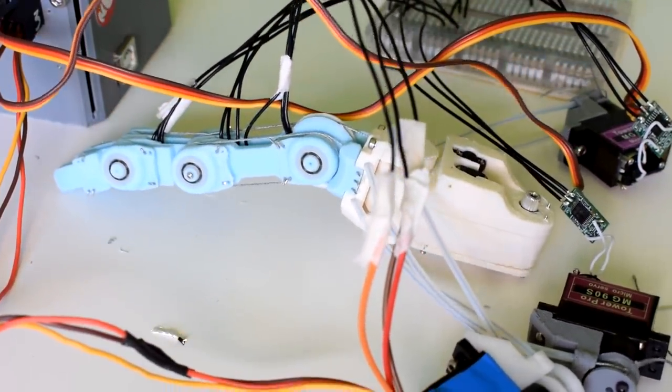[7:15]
The material that I'm using as well, I think I could save myself a lot of hassle by using ABS. That would definitely make those pulleys turn a little bit smoother without having to make any major design modifications. But I do kind of avoid using ABS just because it takes a little bit more setting up and it's more likely to fail. I also feel like the fumes give me a bit of a headache. But what would be really great for this project would be an SLA resin printer. So I'm going to have to see about acquiring one of those somehow.
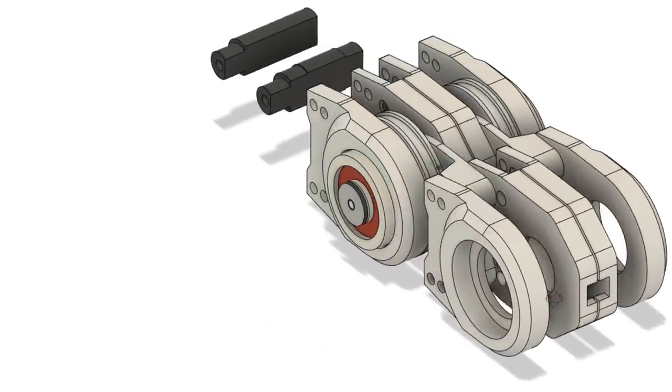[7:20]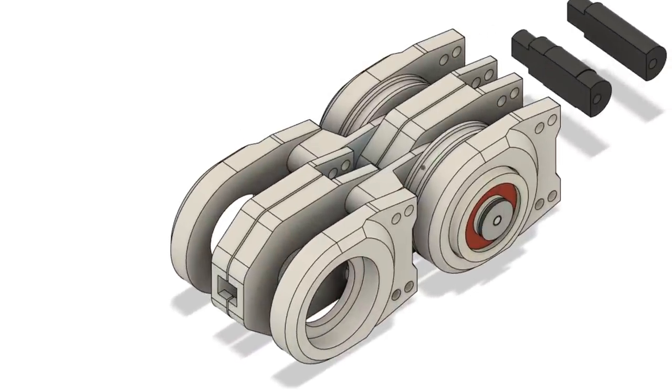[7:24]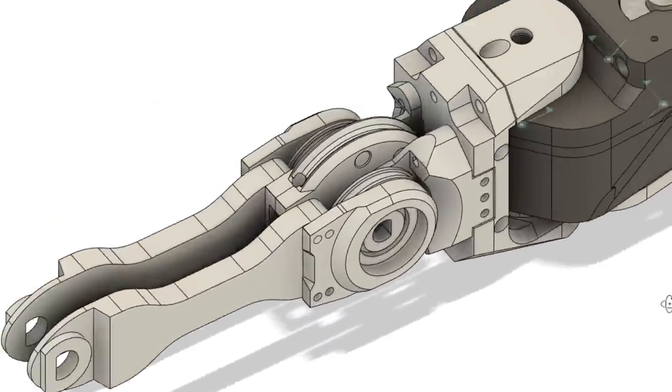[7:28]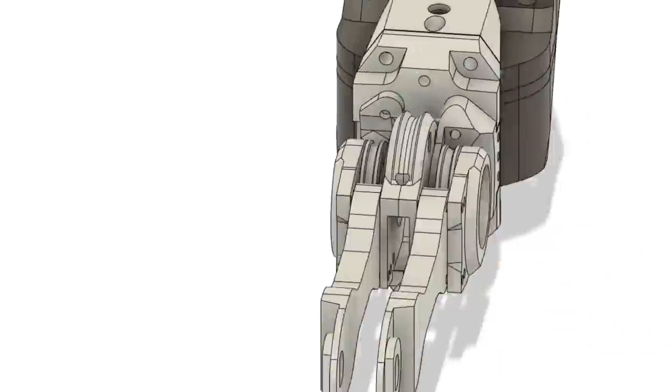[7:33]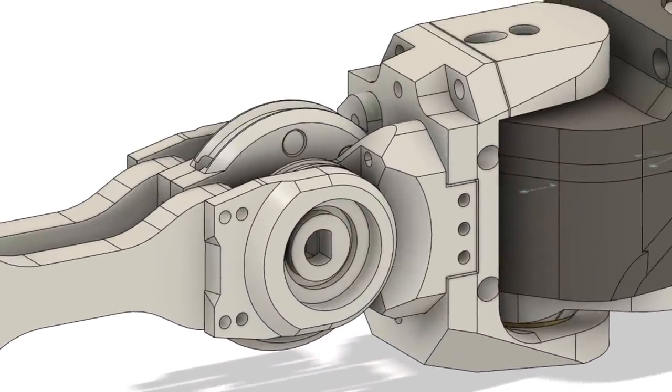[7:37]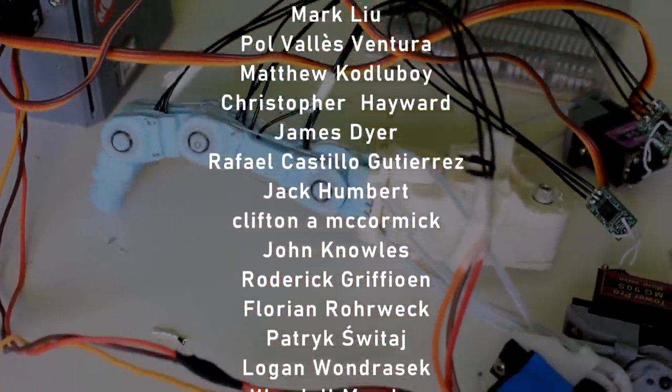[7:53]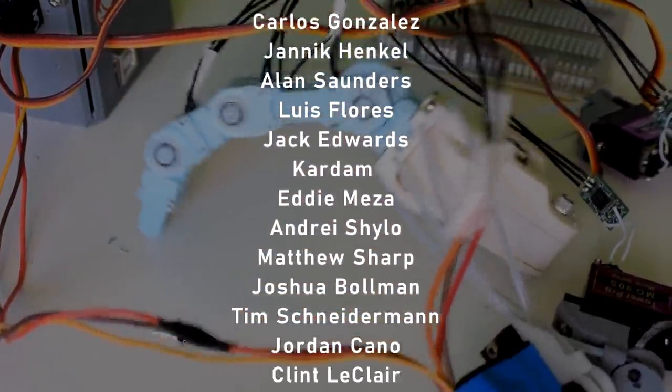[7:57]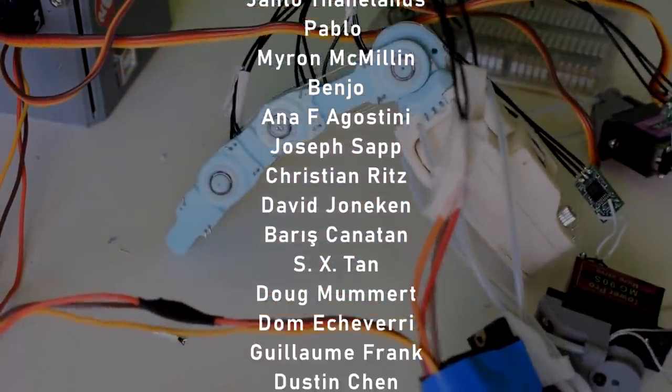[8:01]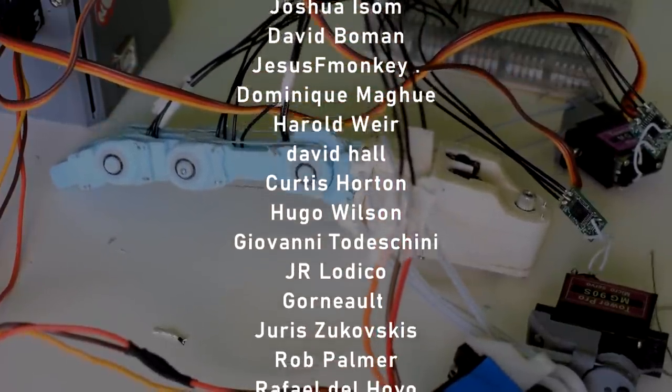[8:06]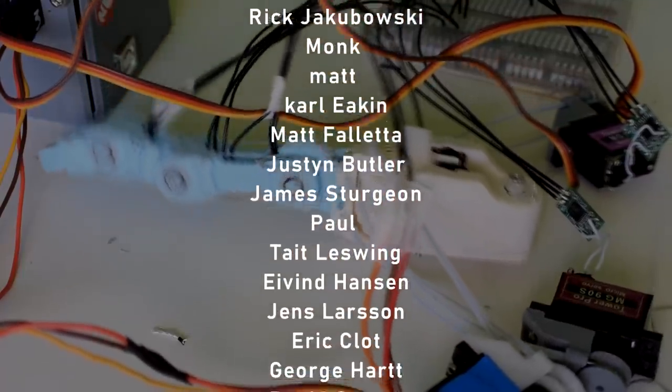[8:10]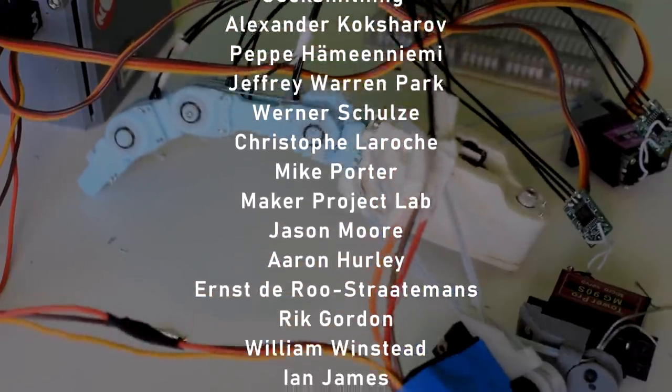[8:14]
I've got a bit of a learning curve ahead of me, trying to work out the ins and outs of SLA printing, which I think I'm going to be using from this point forward. So for the next few videos, I'm going to be looking into biomechanics and anatomy of real hands and trying to work out what kinds of mechanisms I might be using in my own design and looking at current designs as well. So I hope that you'll stay tuned for those videos.
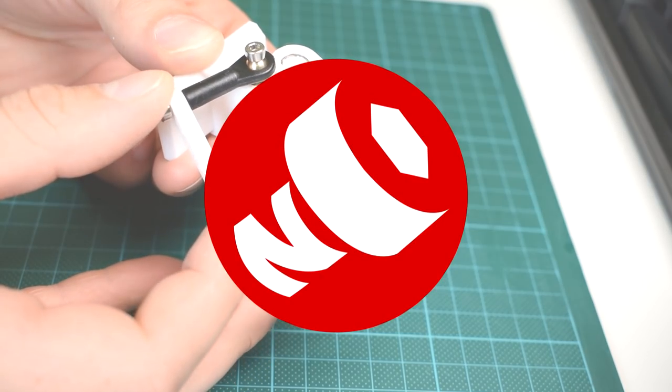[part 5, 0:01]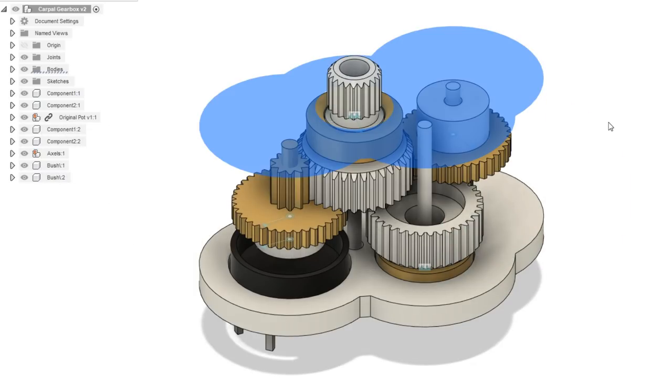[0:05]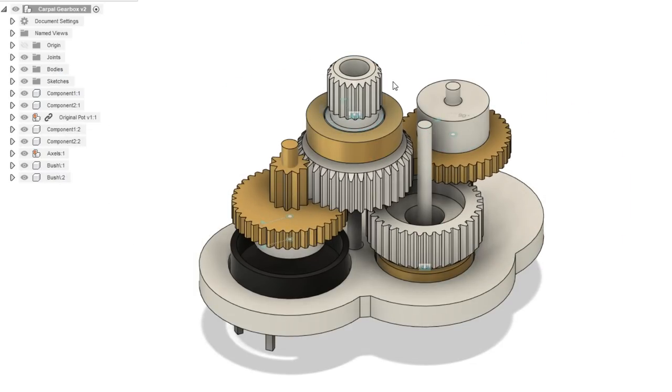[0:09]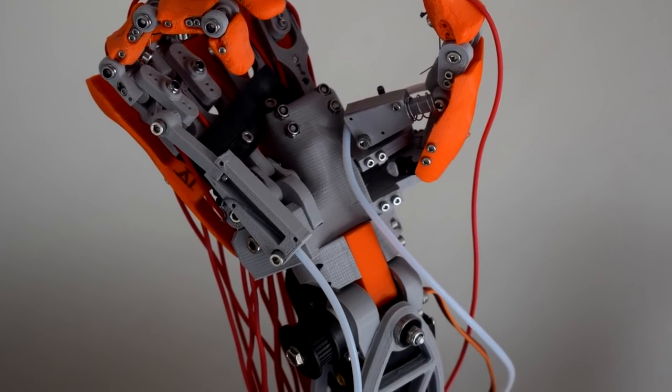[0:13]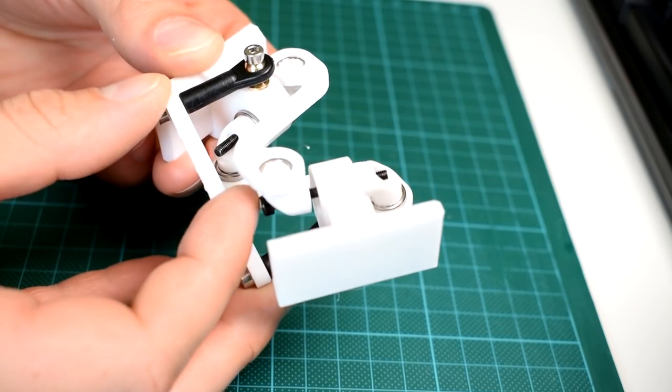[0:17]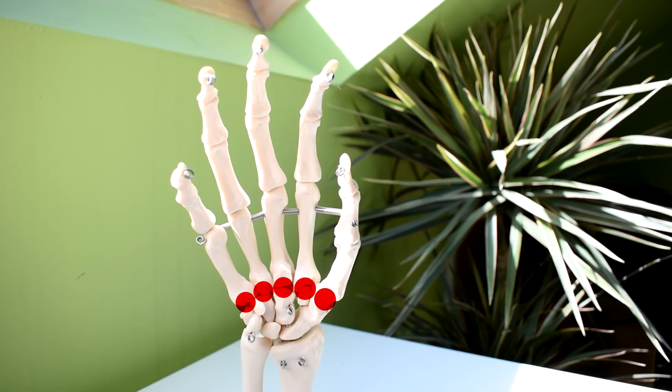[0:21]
Recently I began working on prototyping mechanisms for the CMC joint which would live in the carpal section of the hand. I quickly realized that I still had a lot of questions about the wrist and it became clear that I would need a solid idea of the kind of mechanism I would be using for the wrist so that I can come up with a more solid integrated solution to the CMC joint's wrist and also the carpal section as a whole.
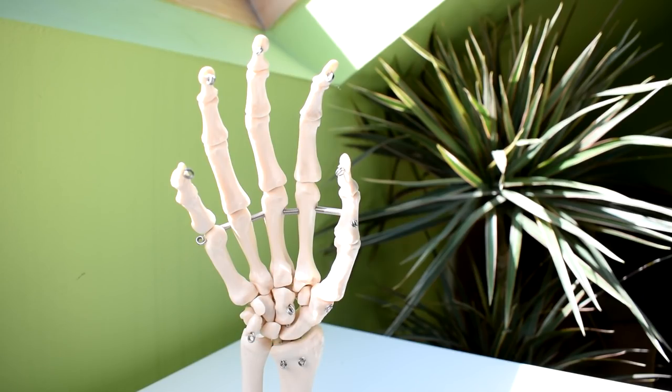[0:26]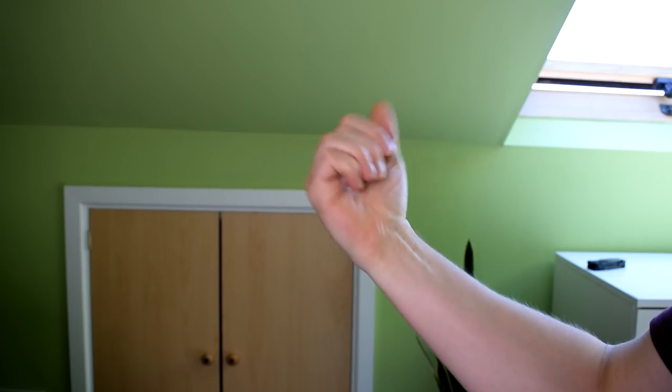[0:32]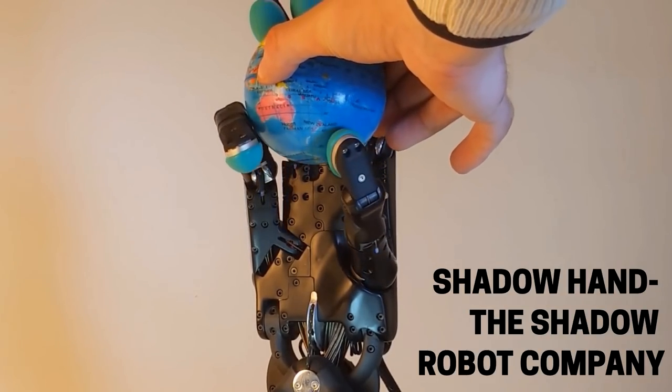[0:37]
In this video I want to give a very brief overview of the anatomy of the wrist and look at how wrists move in real hands. I also want to talk about wrist solutions in other bionic hands and try to work towards how I want the wrist to function in my own hand.
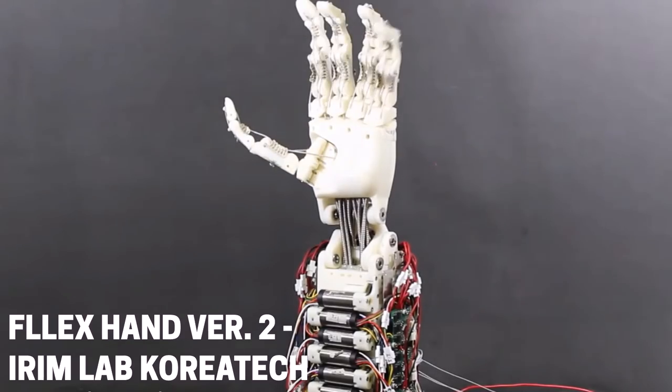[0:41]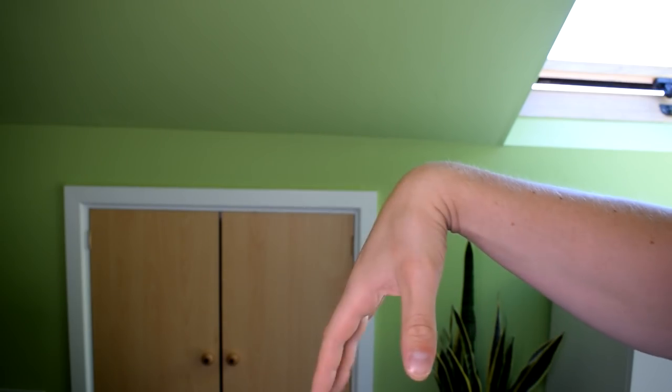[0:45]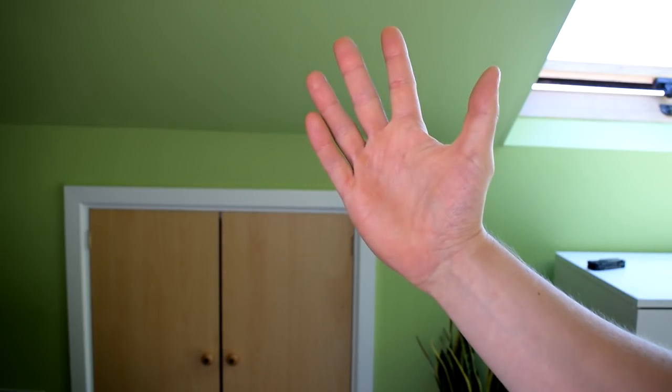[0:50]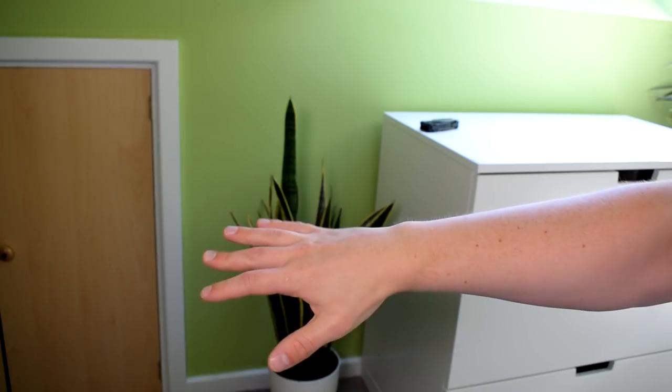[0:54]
Do note that for this video I'm only really going to look at the proximal joints of the wrist which includes the flexion/extension and lateral deviation of the hand as opposed to the distal joint of the wrist which actually has a motion that results from movements in the bones of the forearm.
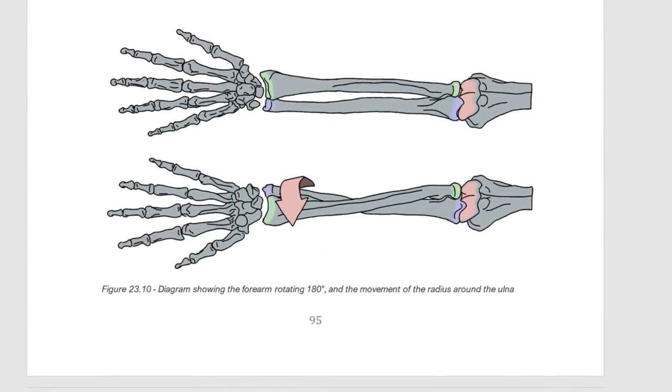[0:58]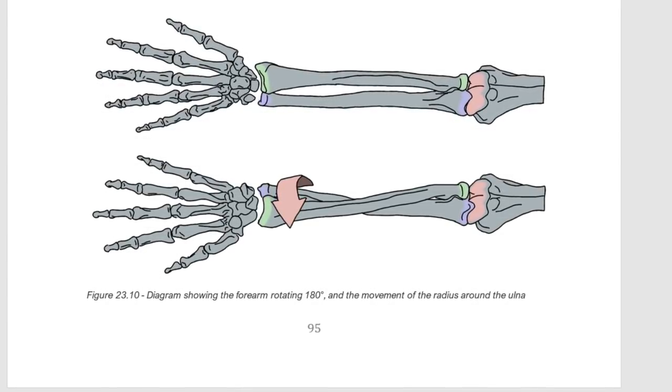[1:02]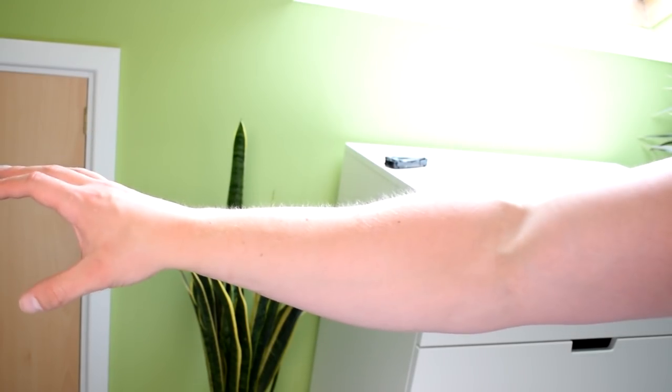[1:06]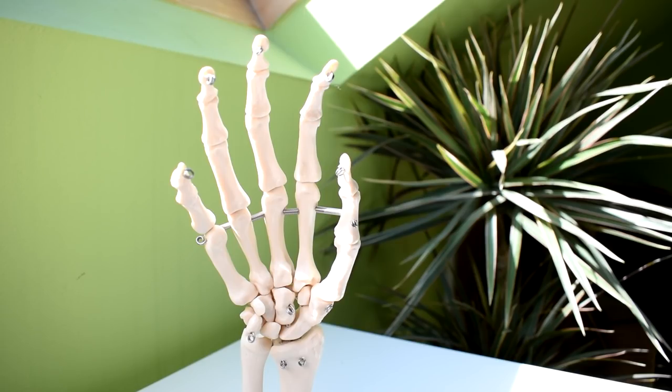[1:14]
I'm making an assumption at least for this video that the turning over of the palm motion in a mechanical prototype would be driven from somewhere near the base of the forearm like in a Rail hand where the motion actually comes in part from your bicep muscle. So what I'm primarily concerned with in this video is the mechanism at the actual physical location of the wrist in the arm which is responsible for movements this way and movements that way.
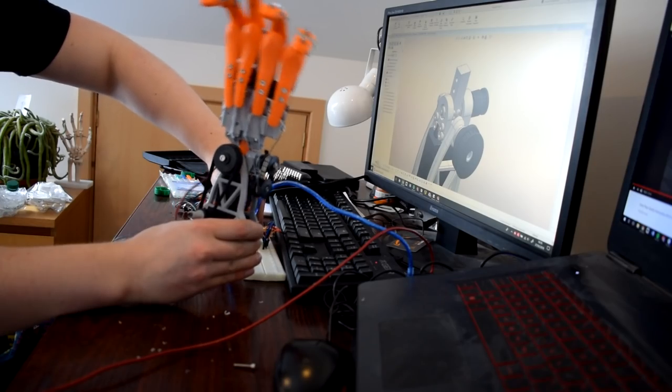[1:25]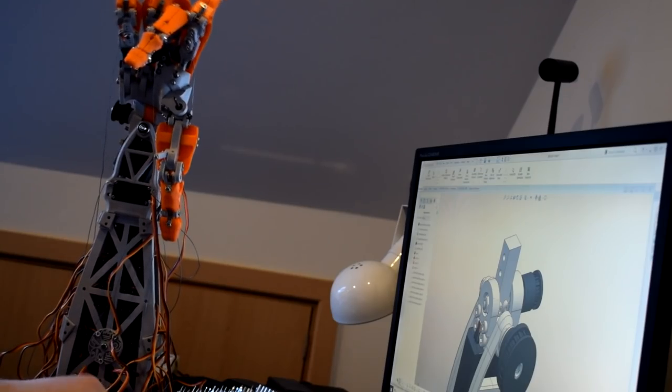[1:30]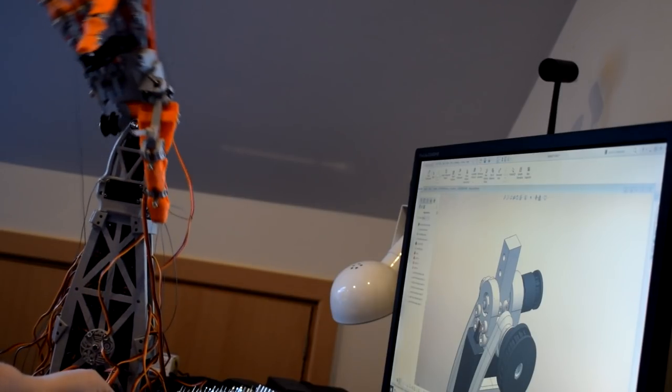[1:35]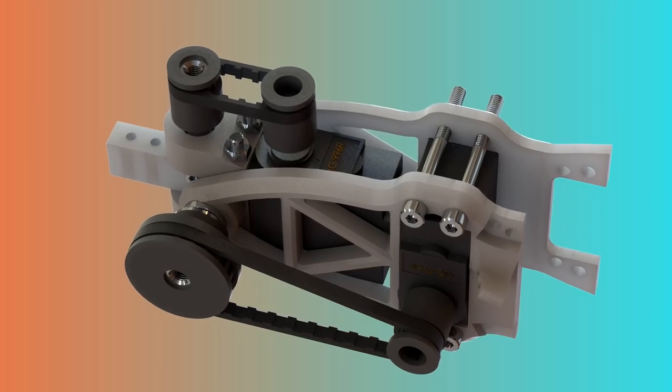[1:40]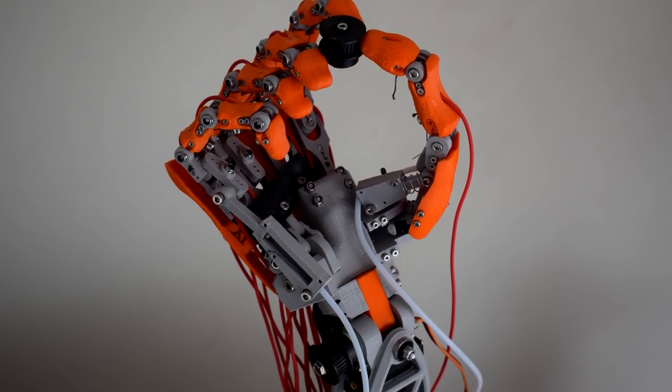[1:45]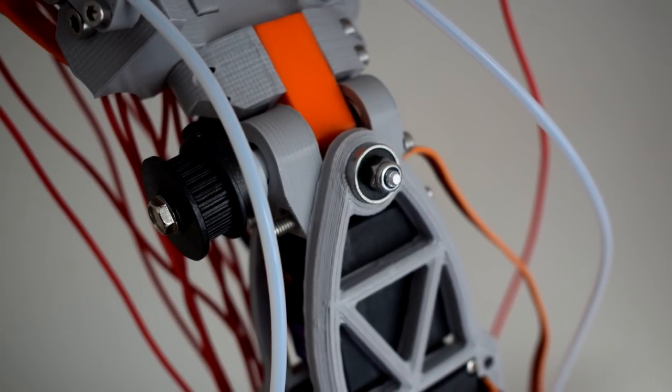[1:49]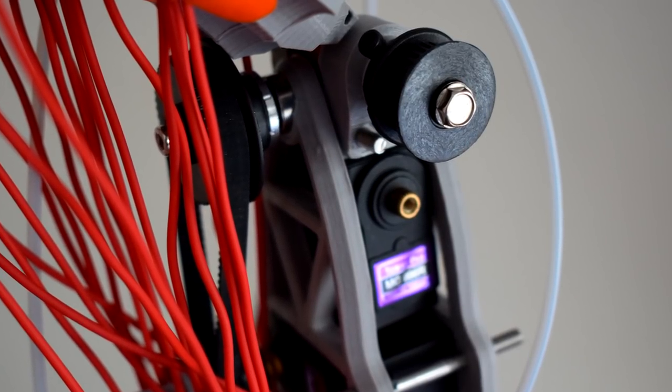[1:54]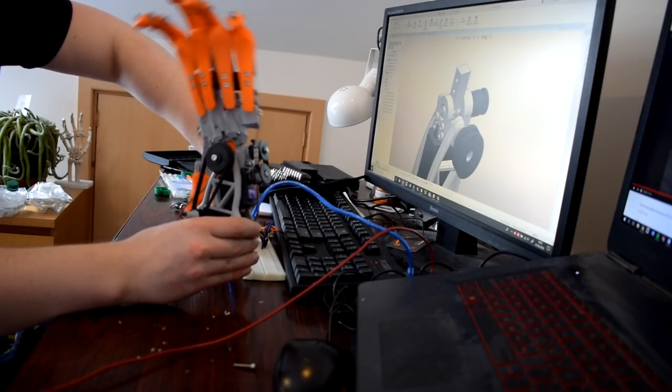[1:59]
So looking at my initial wrist design first of all I think it is probably quite clear that this mechanism was sort of a quick fix. Over the course of the two semesters that I worked on this project I had a lot to get through and I think that maybe some of the design from the wrist down sort of took a back seat really in comparison to the fingers, palm and thumb. The mechanism is simply two hinge joints with a common axis which is a totally valid solution but since I used these really big MG996R servos and tried to cram them into the joint itself it ended up working pretty poorly and looking quite bad too.
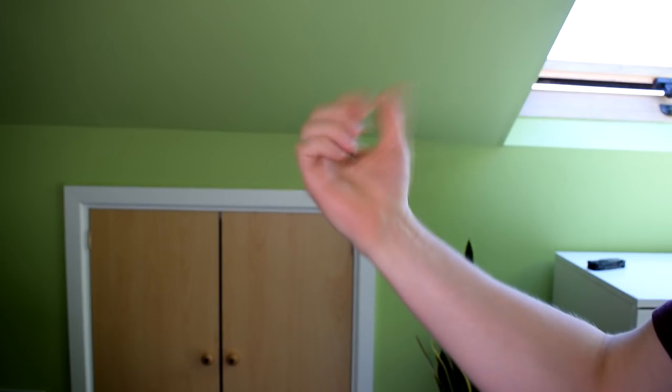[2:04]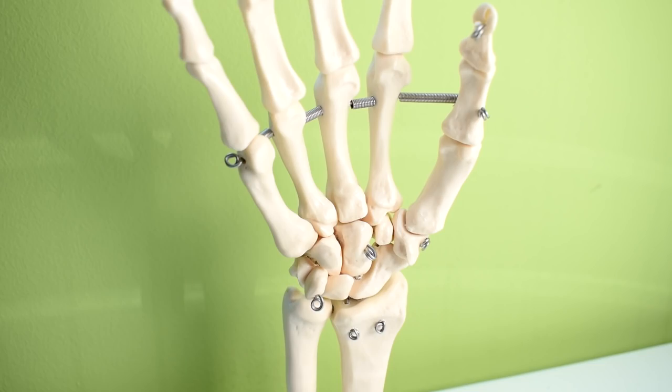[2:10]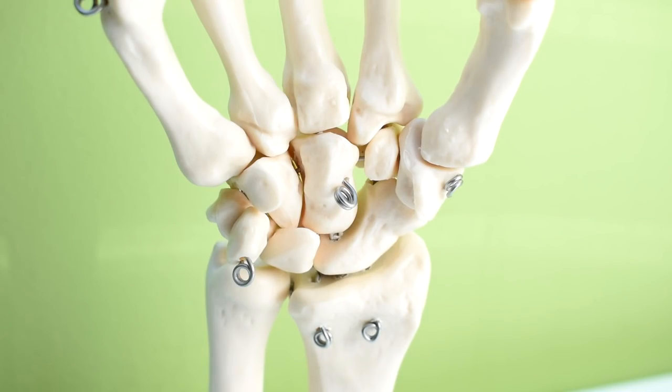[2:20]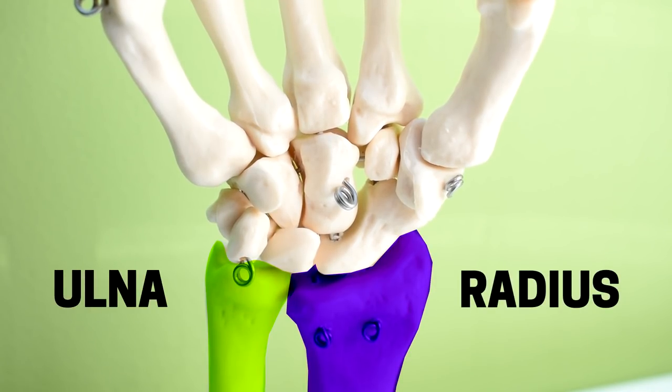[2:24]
So the wrist although it looks like it could be a really simple ball socket joint is actually far more complex. In the carpal section of the hand which is the big cluster of bones under the metacarpals there are eight little bone nuggets which are all involved in the motion of the wrist. These carpal bones move around on the radius and ulnar bones of the forearm which together form quite a complex joint surface.
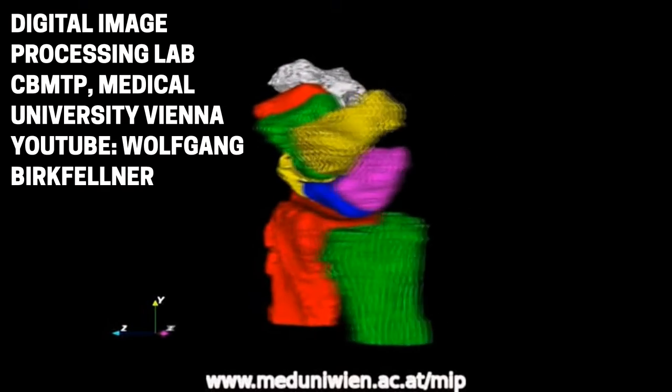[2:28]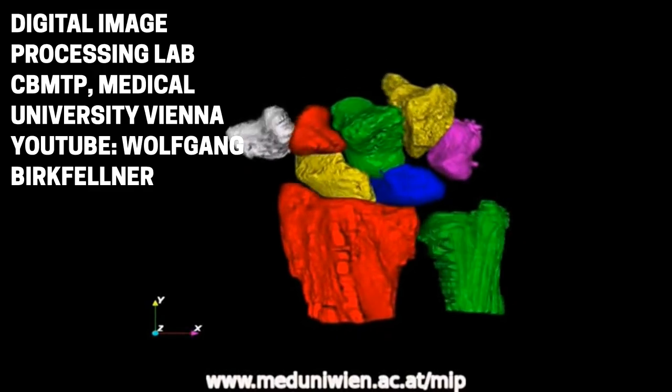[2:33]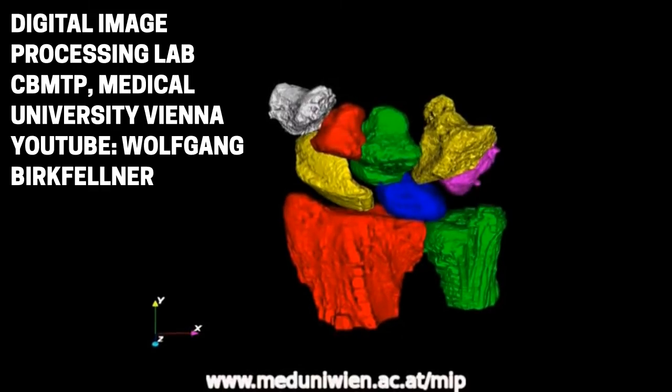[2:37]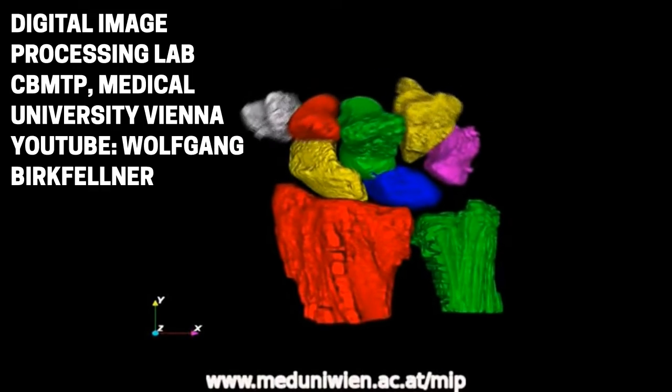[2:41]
It was tricky to find any scans or animations that show how exactly the carpal bones move and in this example from the Medical University of Vienna I should mention that there are some errors and artifacts but you should get an impression of just how complex the kinematics are. Supposedly there are 42 degrees of freedom between all of the carpal bones.
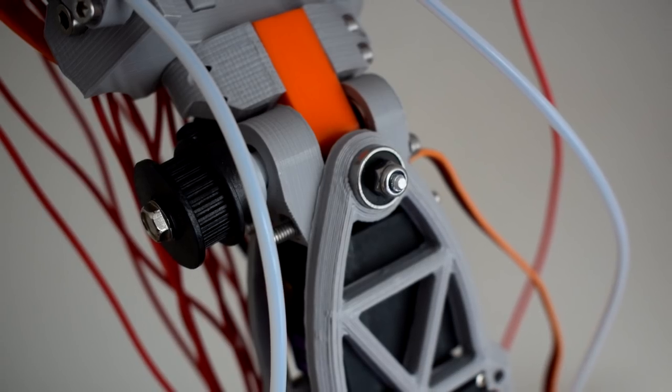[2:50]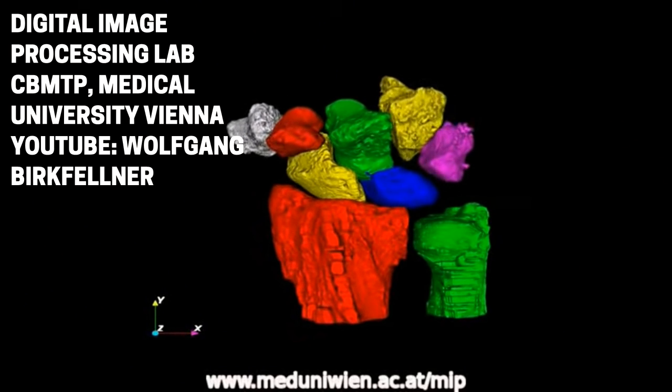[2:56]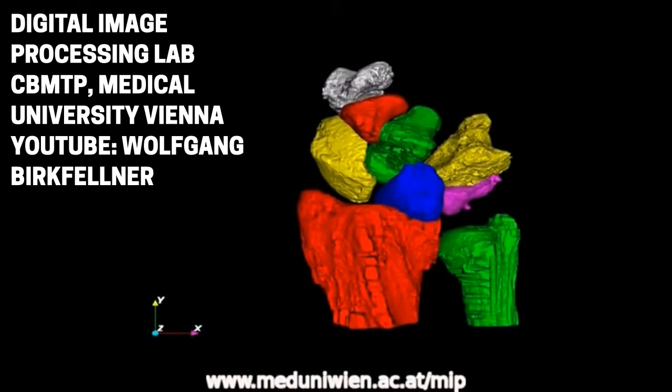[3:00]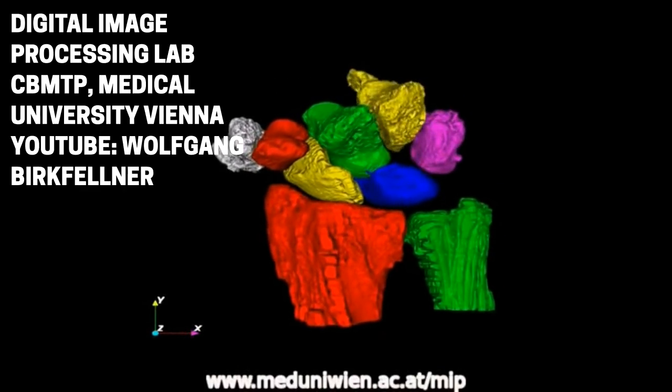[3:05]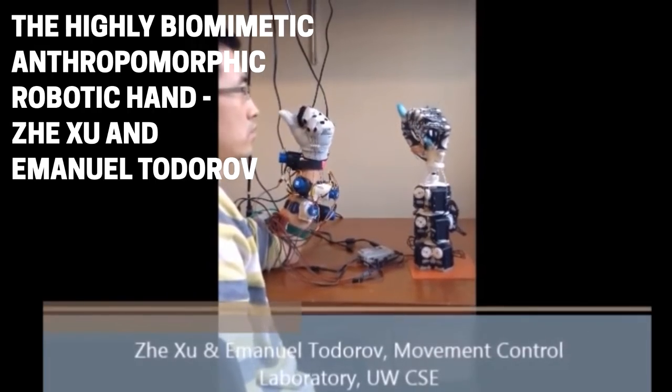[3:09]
When it comes to designing a simplified mechanical model of the wrist the issue comes from the fact that the wrist is actually a mobile system of joints able to adapt its form depending on the forces applied to it rather than being something we can really find a static or even moving center of rotation for. So I think that trying to directly replicate this structure or its movements mechanically would be very inefficient for a project like mine.
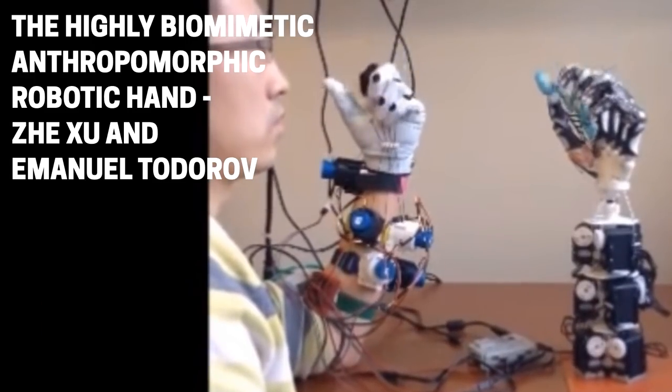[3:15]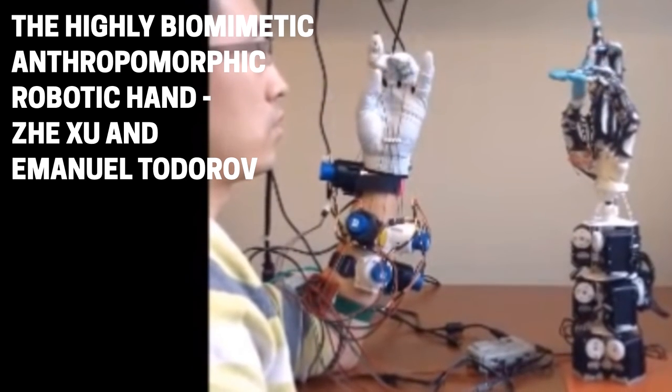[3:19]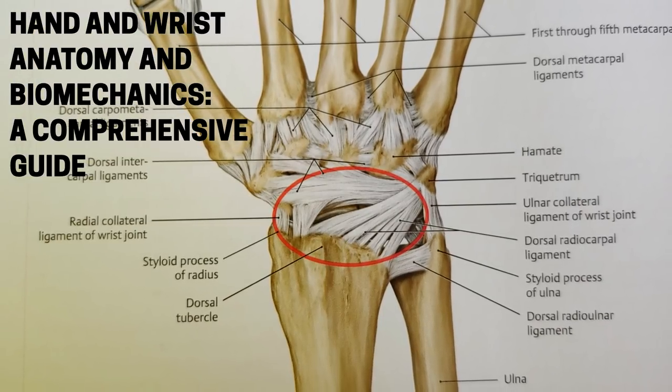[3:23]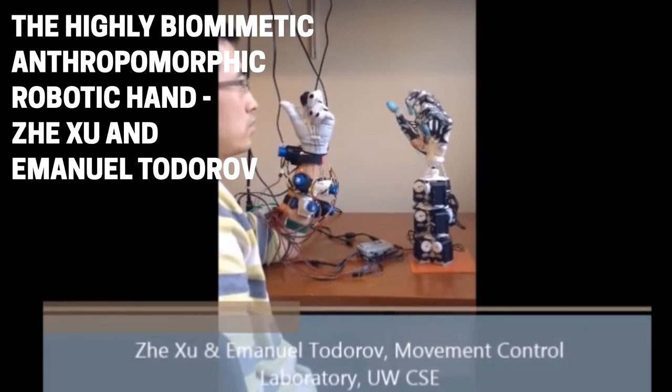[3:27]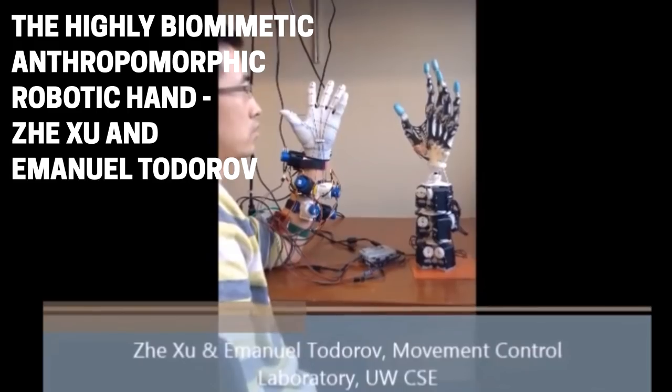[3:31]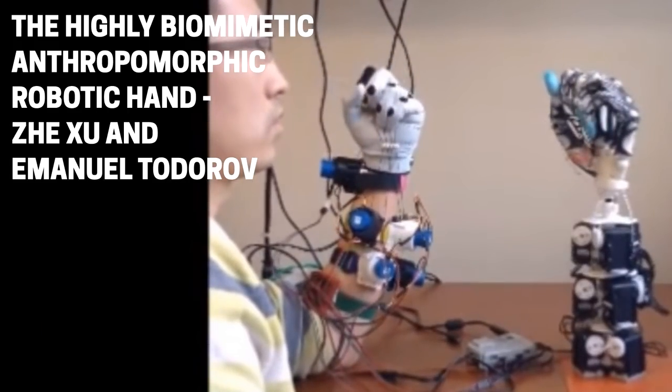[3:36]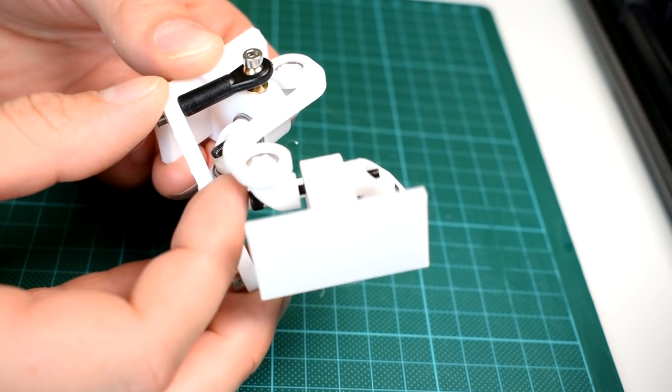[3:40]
Maybe if you took the HBRH approach and replicated the quite frankly nightmare of ligaments, joint capsules and tendons in the wrist you could have a truly biomimetic design, and I hope it doesn't sound like I'm disparaging that idea. It would absolutely be incredible to see and I'd love to work on something like that one day. But for my requirements it would obviously be a very good idea to find a simplified mechanical model of this motion.
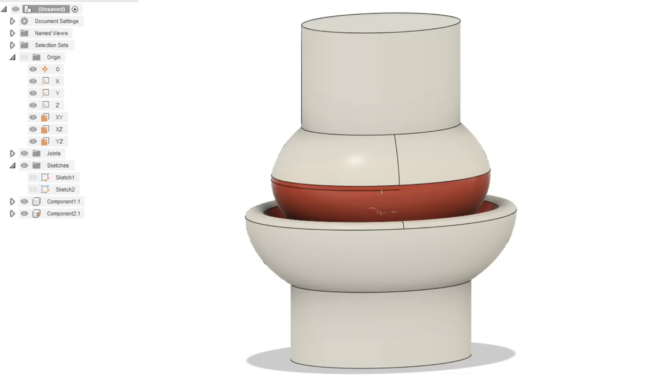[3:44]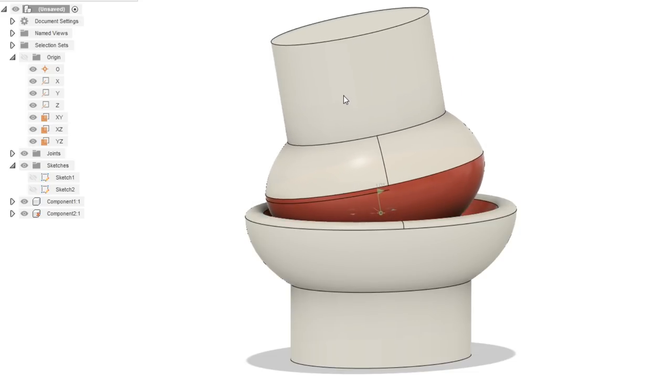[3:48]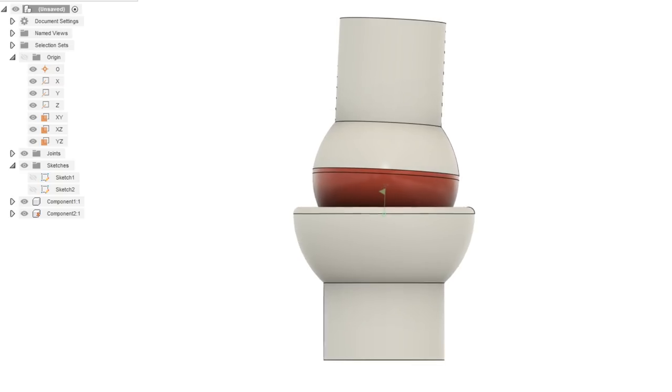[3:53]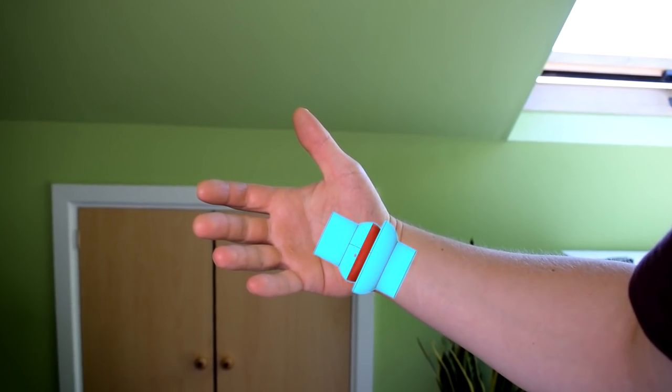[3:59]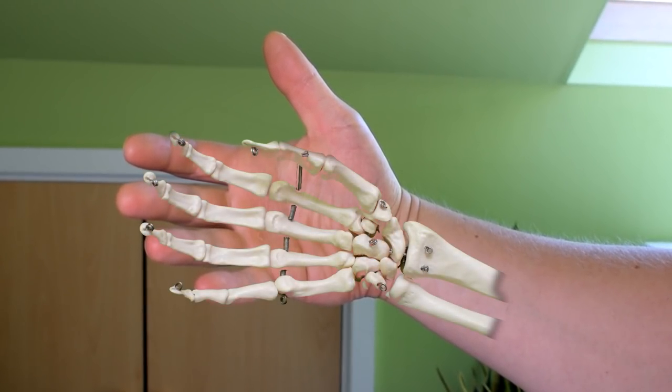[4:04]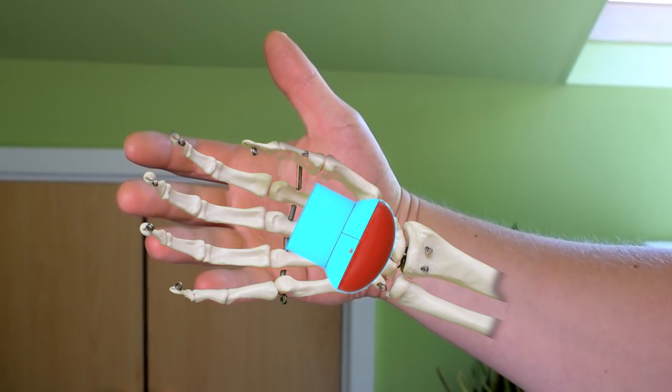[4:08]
So if you remember in the metacarpal motor video I mentioned that the MCP joints of the fingers are condyloid joints which is kind of like an elongated ball socket joint. According to Schmidt and Prommersberger we can actually regard the wrist as a modified condyloid joint wherein the ball section of the elongated ball socket joint is actually made up of those eight bone nuggets which are the carpal bones as I mentioned and the radius and ulna bones form the socket half of the joint.
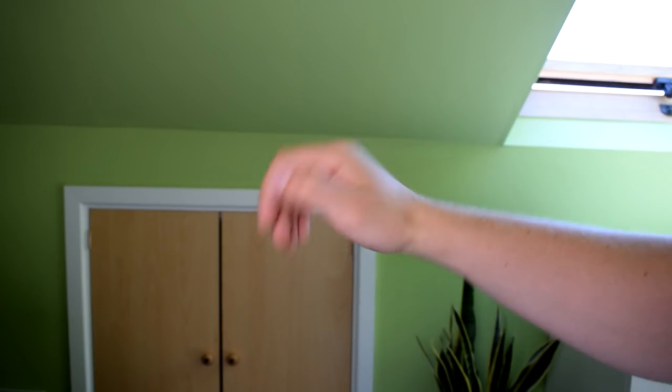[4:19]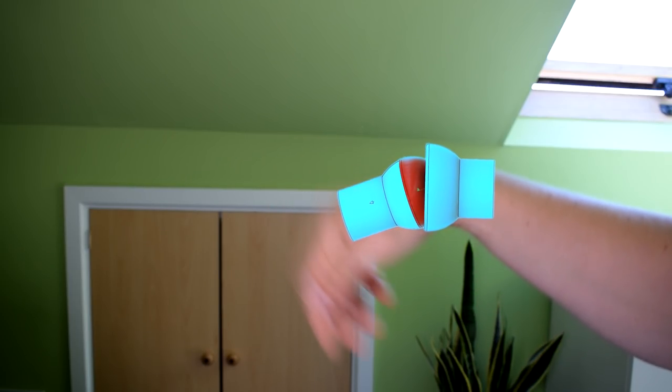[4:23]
My interpretation of this is that in flexion and extension the wrist acts as a relatively small ball socket joint and in lateral movement it's a relatively large ball socket joint.
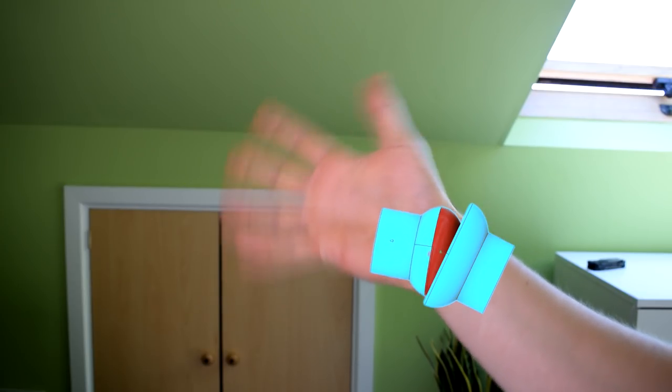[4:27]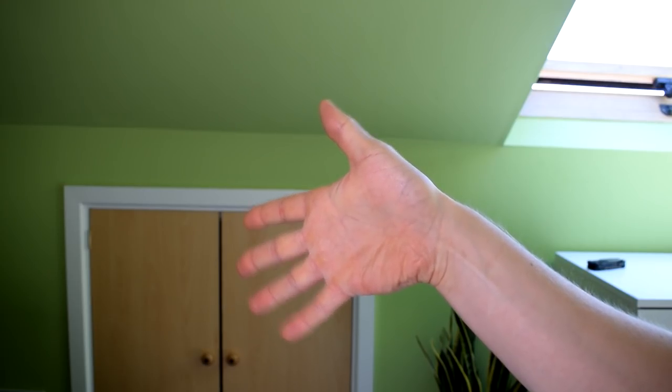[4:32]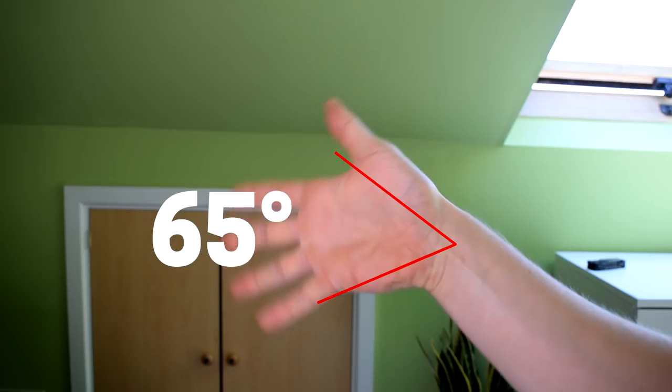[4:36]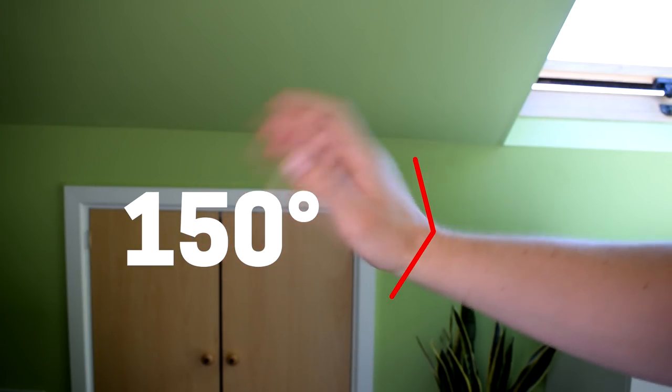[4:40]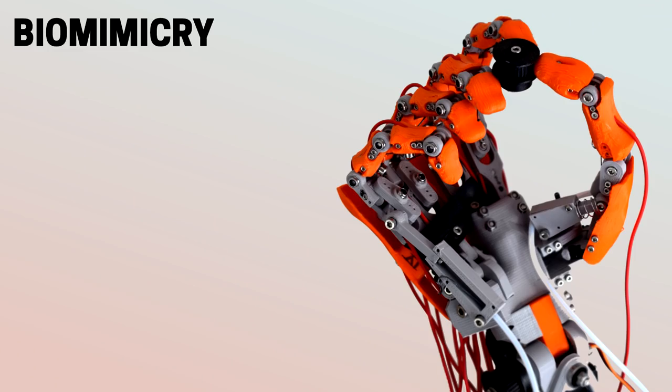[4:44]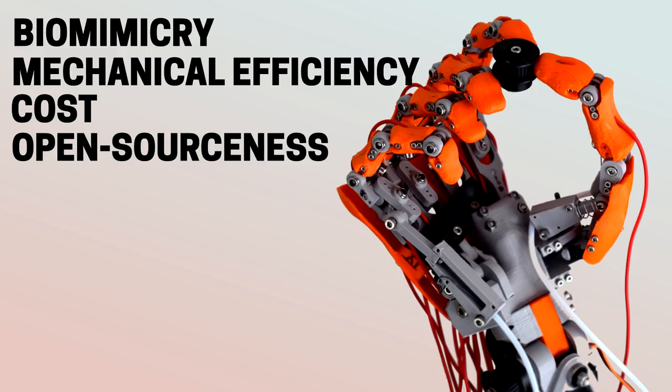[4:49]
What does seem to be a well accepted simple way to look at the wrist's motion is that it appears to have an average range of motion of about 65 degrees laterally and about 150 degrees in flexion and extension. So as I've mentioned before, I want to find a sensible compromise between biomimicry, mechanical efficiency, cost, and open source-ness slash DIY-ness.
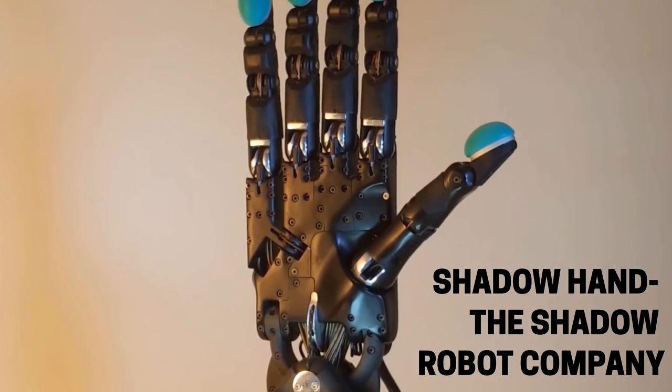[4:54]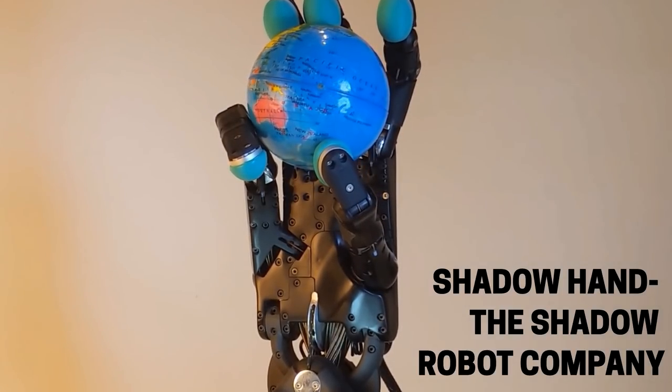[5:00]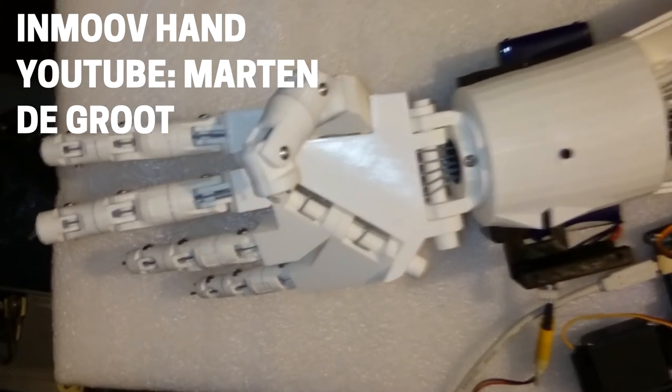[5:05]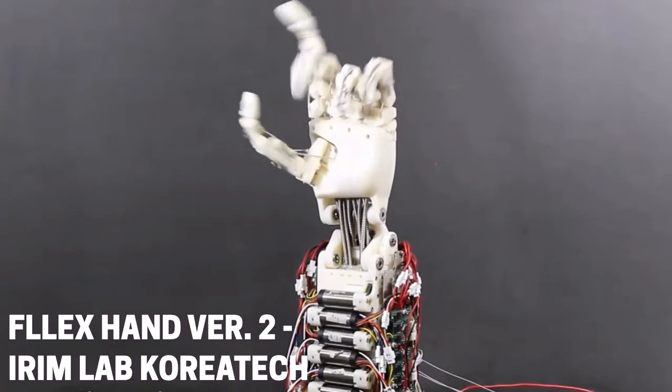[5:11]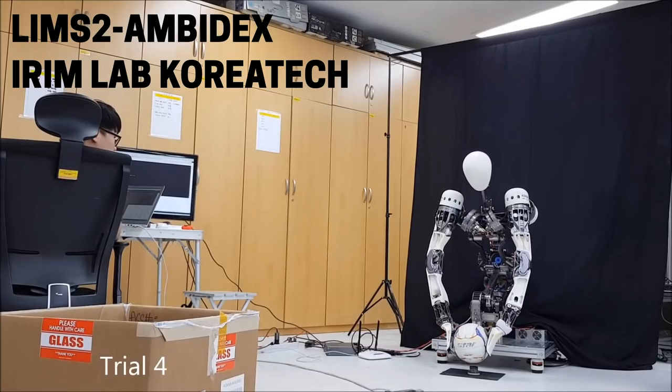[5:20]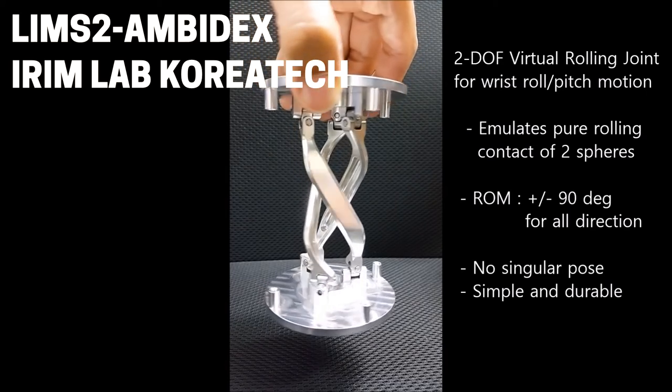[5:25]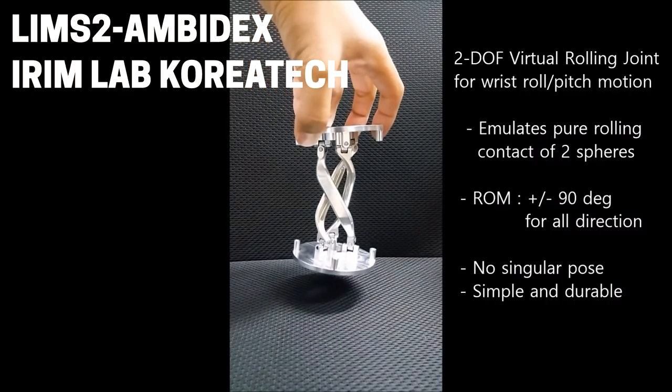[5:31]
To go back to the other mechanical hands that I've been referring to lately, as far as I've been able to tell the Shadow hand is a simple two hinges on top of one another. The InMoov hand has flexion extension and axial rotation, but not really in a way that you could consider biomimetic. The Flex hand appears to not have any wrist motion at all currently, but the IRIM lab, which developed the Flex hand, has a really interesting mechanical joint design in their Lims2 Ambidex robot. The wrist mechanism in that design is a beautifully machined virtual rolling joint, which is designed to emulate the rolling contact of two spheres.
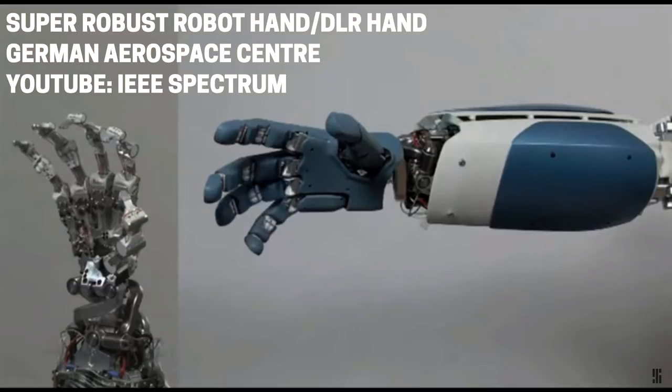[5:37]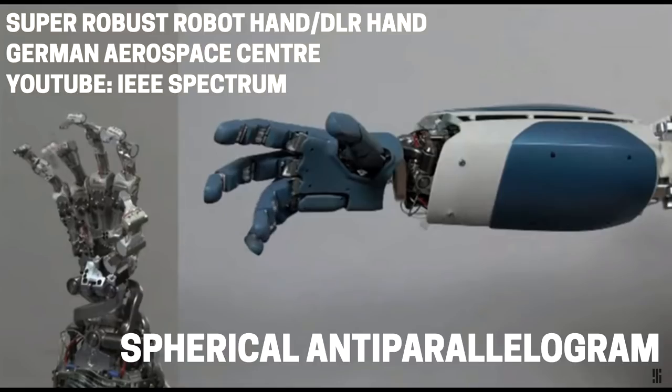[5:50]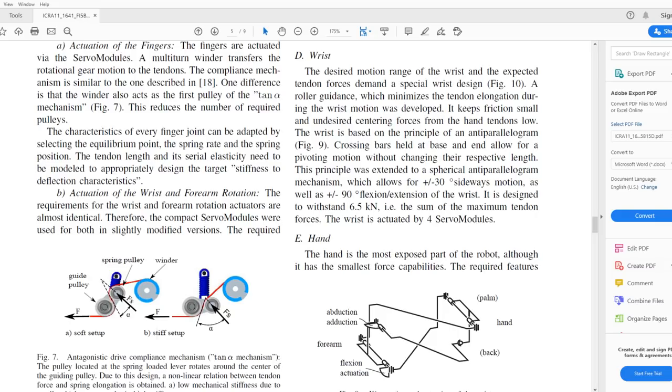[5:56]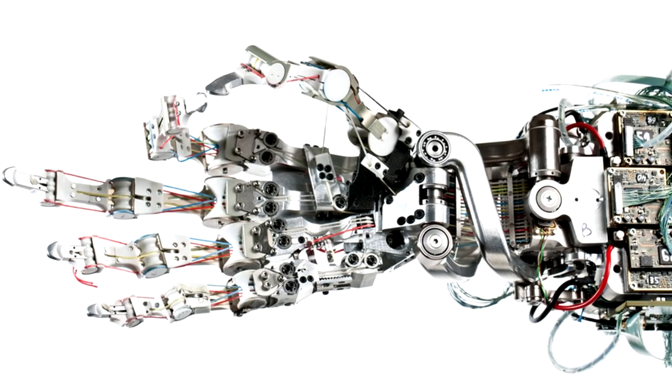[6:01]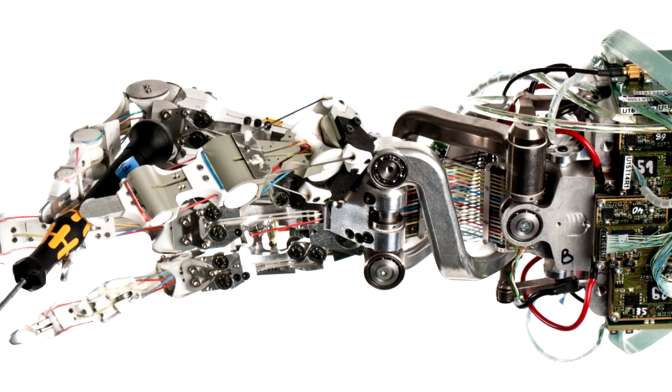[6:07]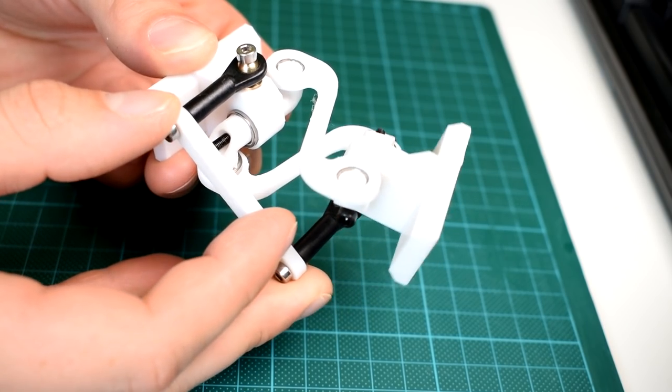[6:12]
This led me to the DLR hand, which is a mechanical hand that I've been aware of for some time, but for whatever reason I've never really looked into it as closely as I ought to have. The wrist in the DLR hand uses a mechanism called a spherical anti-parallelogram mechanism. I wish I could find a bit more information about this mechanism or why they decided to use it, but from what I have been able to work out, it's really effective for allowing the tendon cables to pass through its center, one because of the open space and also because of the way it moves, since it minimizes the change in distance between the forearm section and the wrist section of the design.
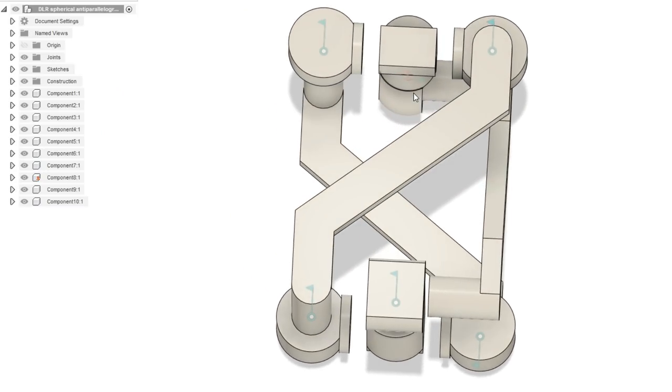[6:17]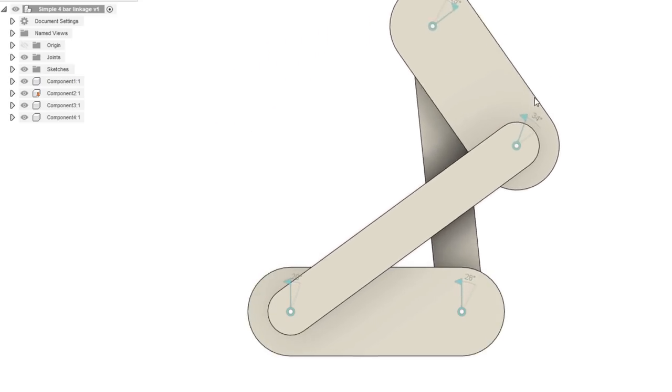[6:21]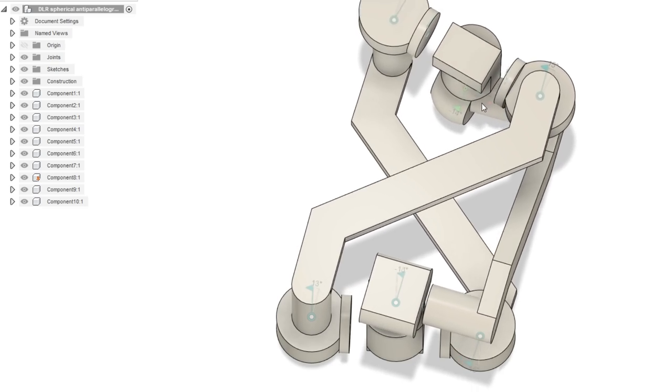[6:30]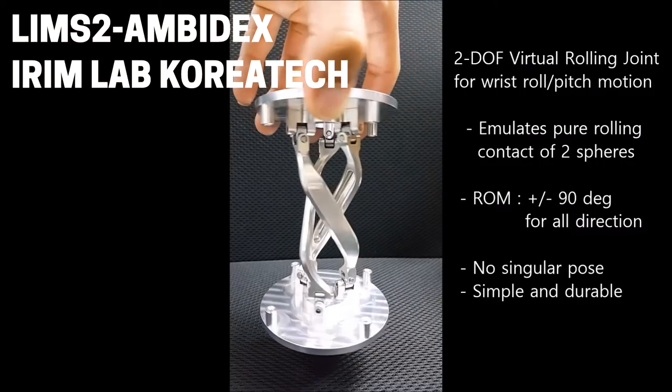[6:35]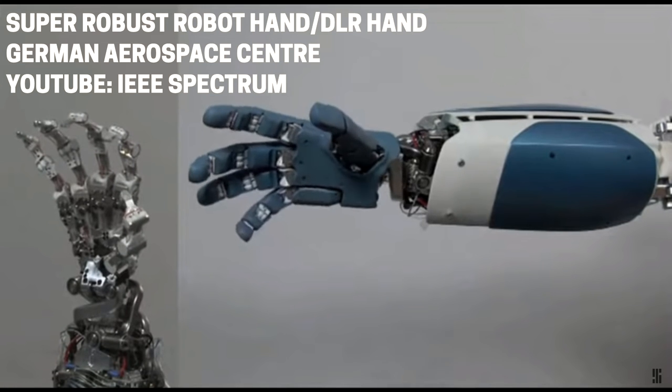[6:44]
Looking at it from the top down, it does look like just a simple crossed over 4-bar linkage, and it also looks like it can be actuated from the forearm side by driving just two of the joints. It took me a while to wrap my head around this mechanism and I'm still not sure that I fully understand it, but it does look to be functionally quite similar to the IRIM lab wrist joint I mentioned earlier. From the limited footage I've been able to find of the DLR hand, it looks like the wrist mechanism in the actual prototype of that arm might not actually work very well, but that's not necessarily because of the mechanism structure.
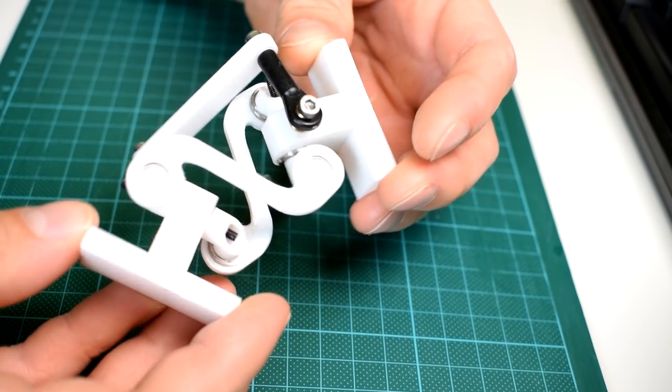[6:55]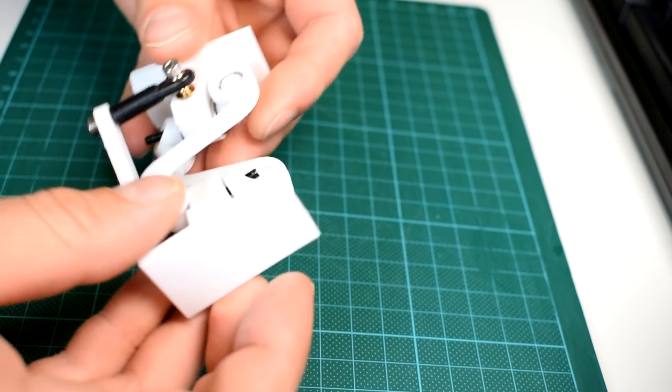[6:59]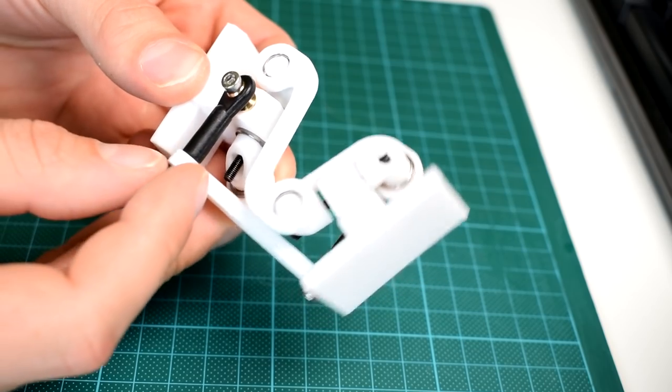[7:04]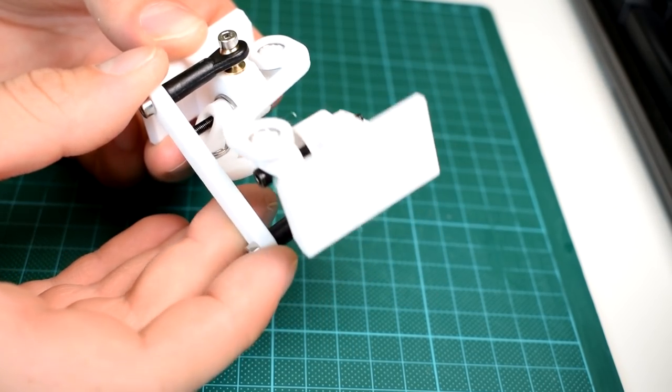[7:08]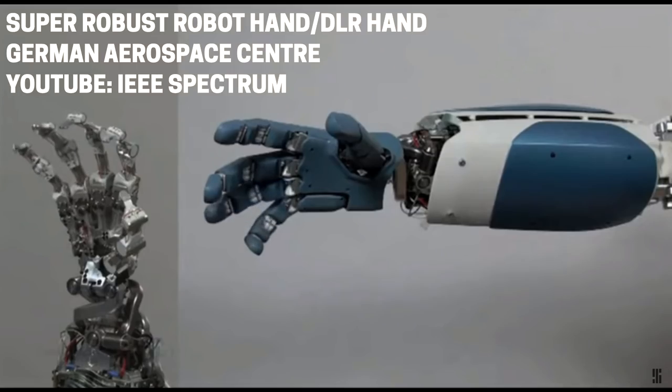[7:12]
My first impressions of that mechanism and my brief experimentation with this very quick mechanical mock-up lead me to think that the DLR spherical anti-parallelogram mechanism satisfies the condyloid joint requirements of acting with a wide roll laterally and a small roll in flexion slash extension. I really like the design of it, but I also think that the DLR hand, and particularly its forearm, is much bigger than a human's. In my design I'm going for a more standard human form factor.
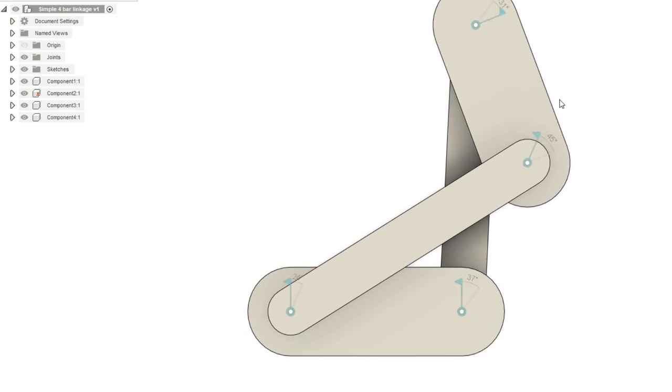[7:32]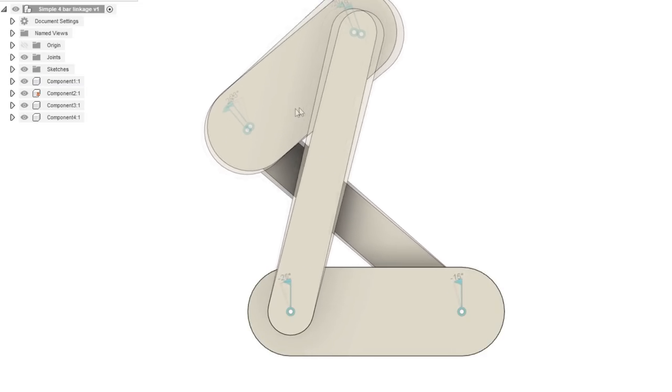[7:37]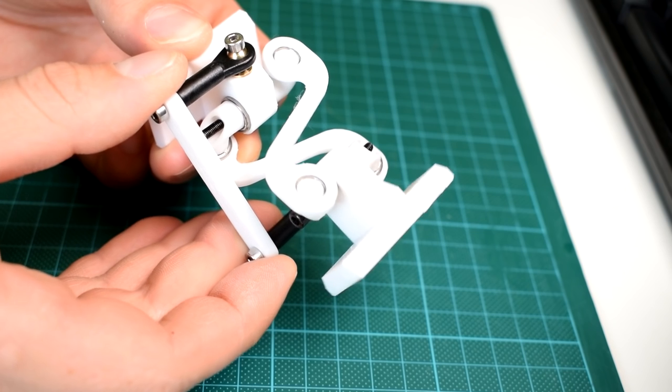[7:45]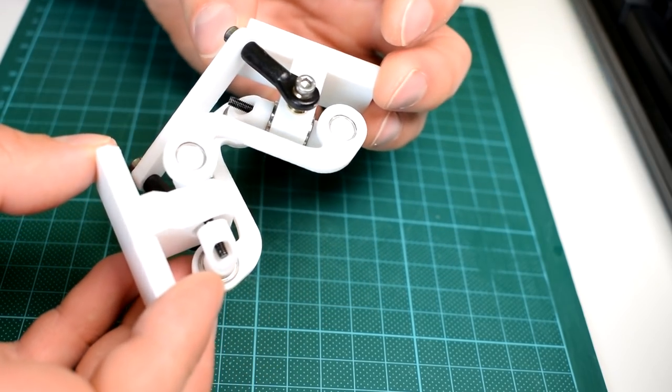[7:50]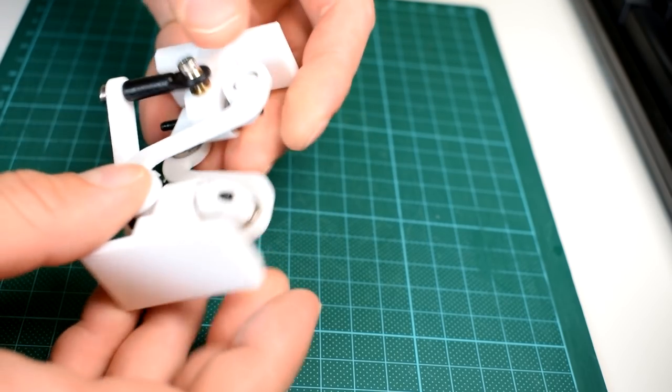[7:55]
So moving forward I need to make a decision about how far I'm willing to simplify the wrist mechanism. It makes sense to me to at least use a crossed 4-bar linkage for the lateral motion to allow the cables through, and because it appears to emulate a pretty natural rolling motion like the motion of a real wrist. If I'm going to the trouble of having a 4-bar linkage in the wrist for the lateral motion, then it wouldn't be too much of a stretch to also add the flexion and extension motion using a very similar looking mechanism to the DLR hand's. But since the requirements in my design are going to be a little bit different to that design, it's difficult to say at this stage if that will be a viable option or not.
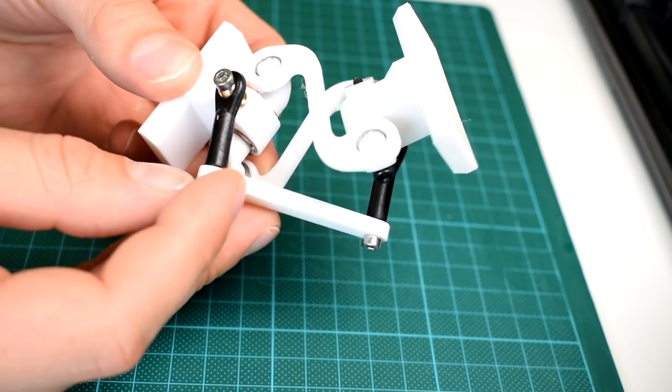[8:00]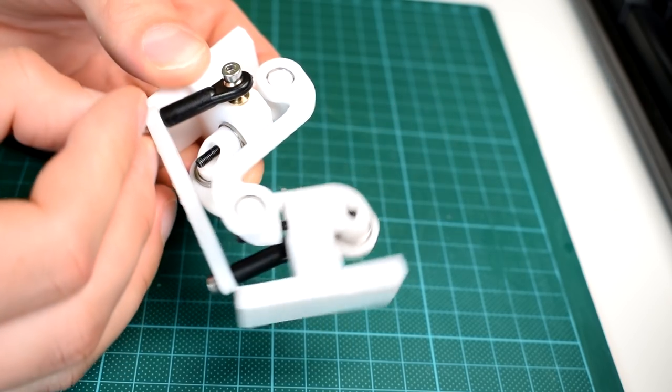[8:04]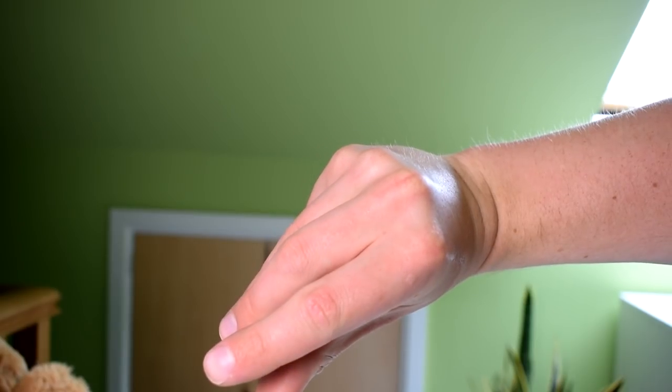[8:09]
So armed with this information, now I should be able to start working on an integrated solution which will include both the two axes of motion in the wrist, the palm's motion resulting from the CMC joints, and also the saddle joint of the thumb.
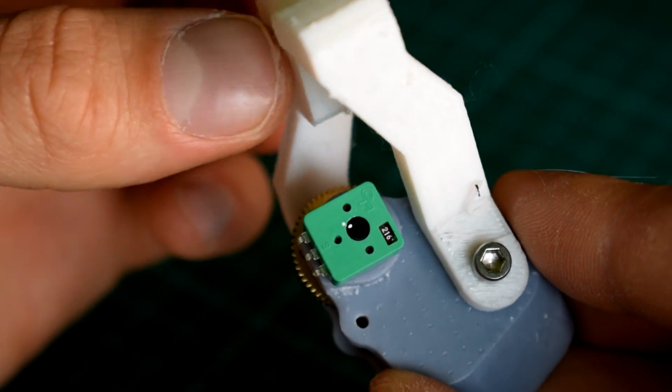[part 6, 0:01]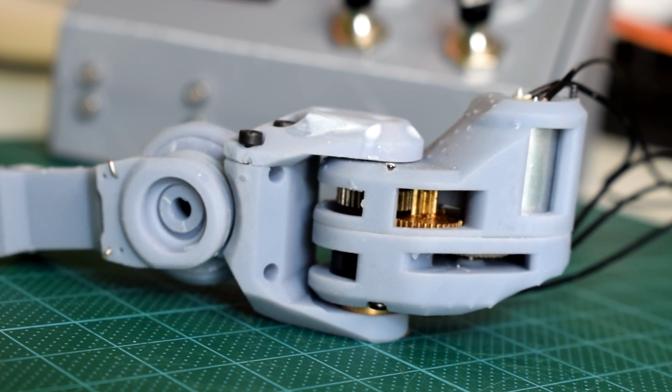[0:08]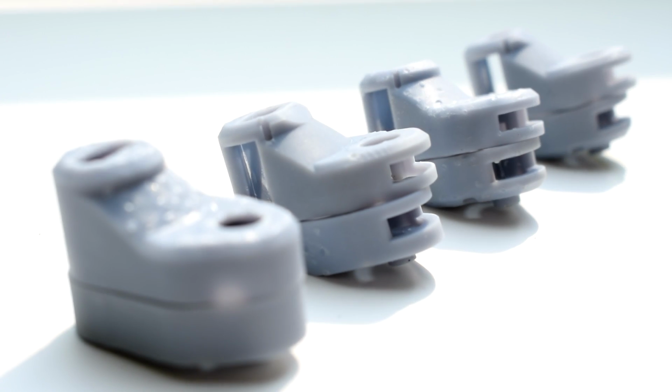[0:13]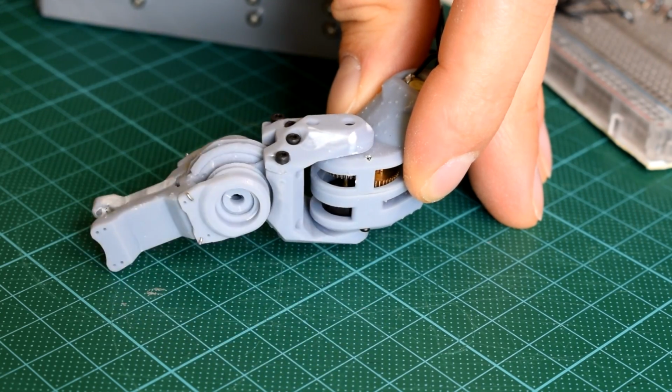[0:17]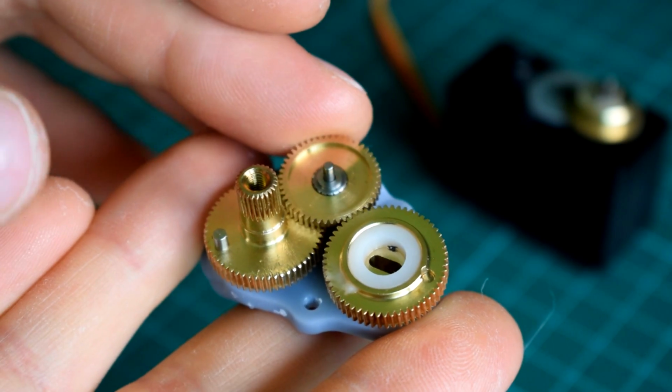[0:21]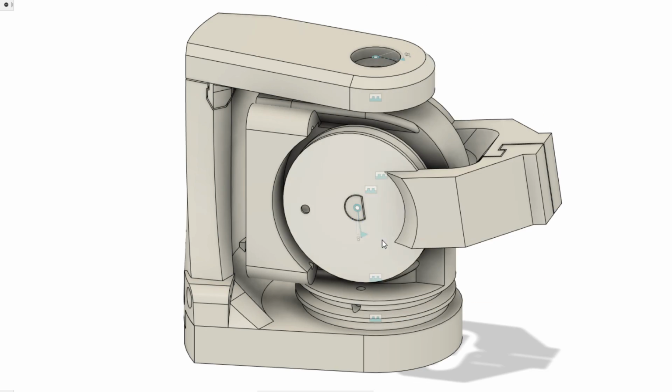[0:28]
So I think that for now, we're past the in-depth anatomy stage of the project and we can get into some real focused effort on developing mechanisms. In this video, I'm going to introduce two new mechanism designs: a gearbox for controlling the movement of the fourth and fifth metacarpals, and a simple, compact two-axis hinge for controlling the CMC joint of the thumb.
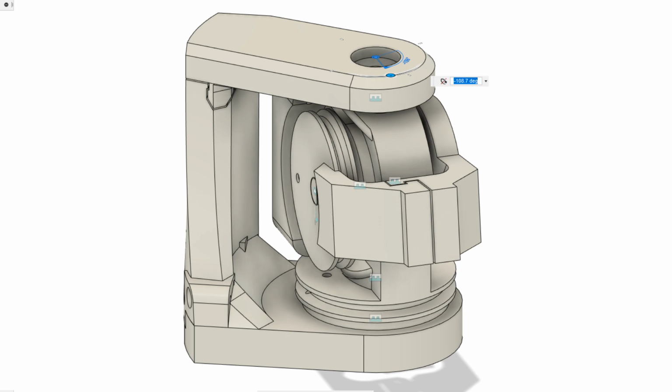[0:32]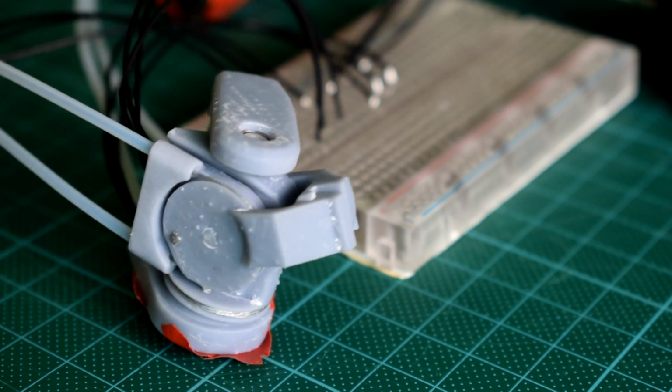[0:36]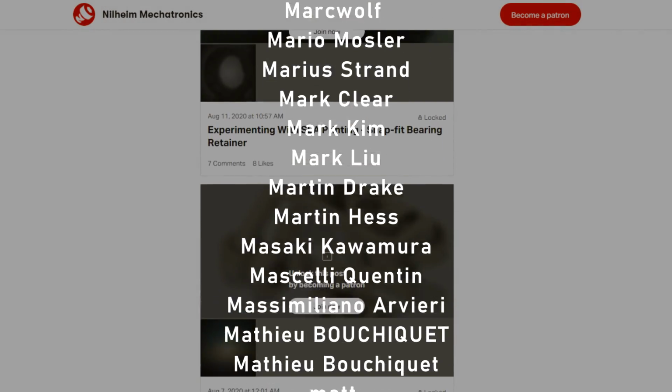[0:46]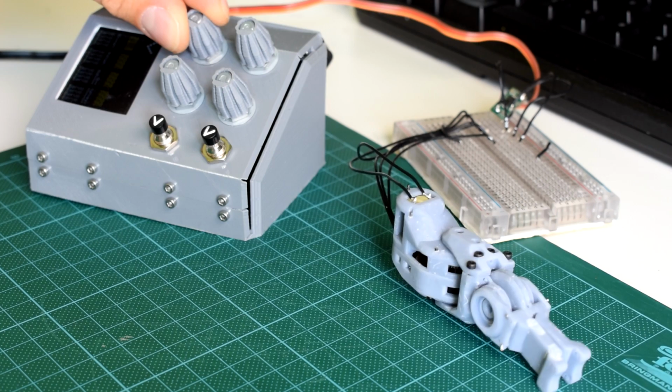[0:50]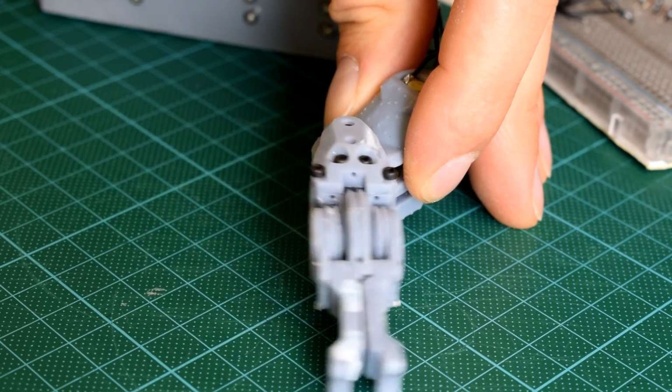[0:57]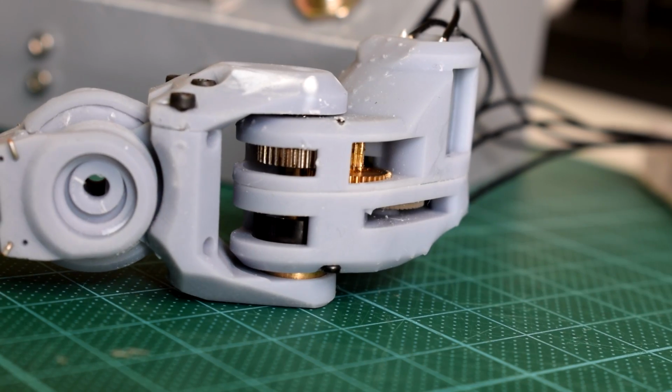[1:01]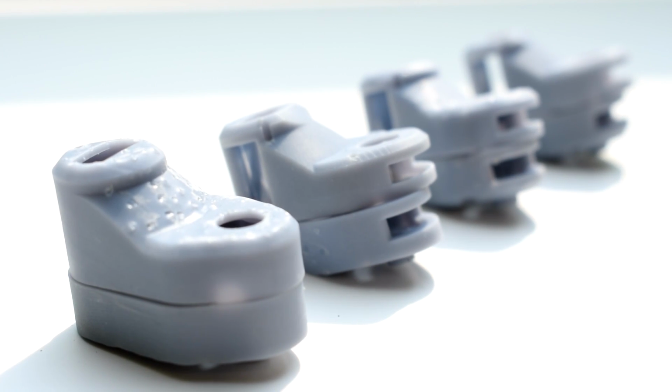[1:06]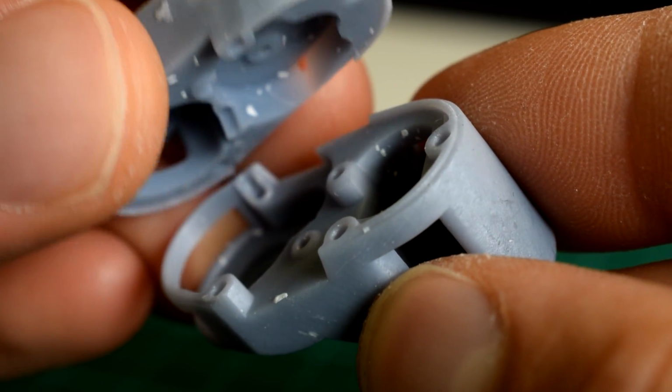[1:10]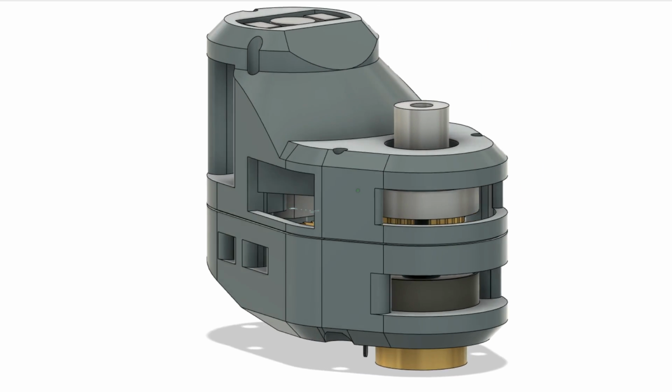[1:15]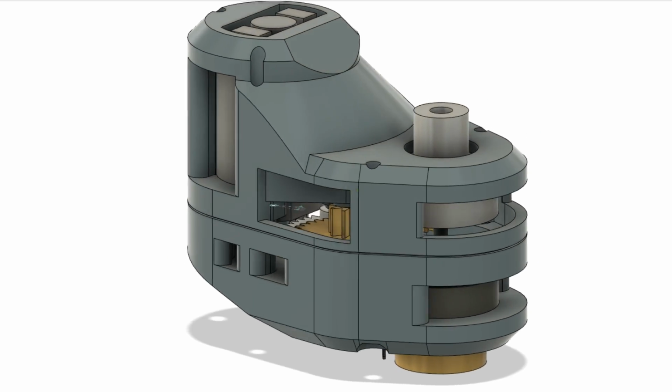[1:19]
So before I get into the new components, I want to mention the metacarpal motor component, which I talked about in another video recently. I wanted to be certain that it was a reliable design before I started working on any new parts, so I went through a series of prototypes and perfected things like tolerances between gears, and I also added some alignment features too. One helpful thing that I did was to actually make a skeletal version of the motor with as much open space as possible to see directly into the motor and find out which gears were moving well and which weren't.
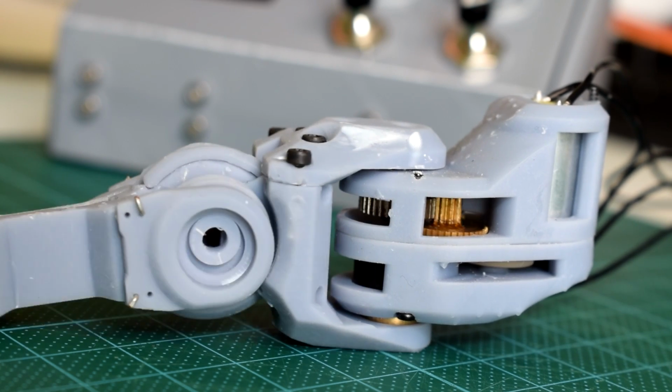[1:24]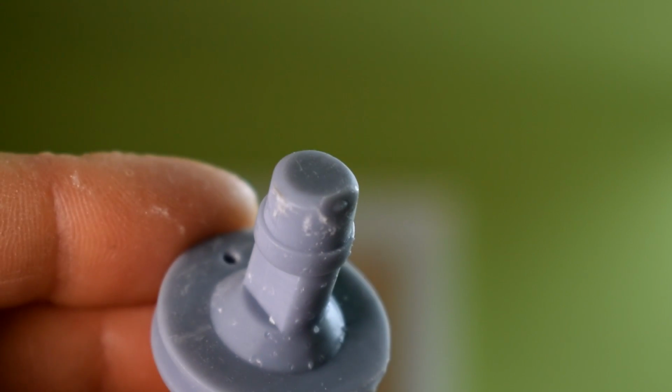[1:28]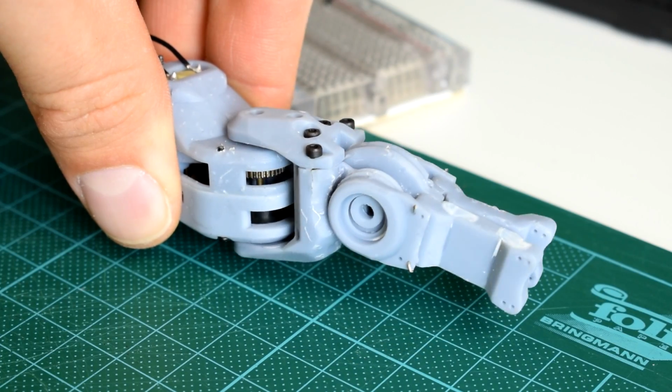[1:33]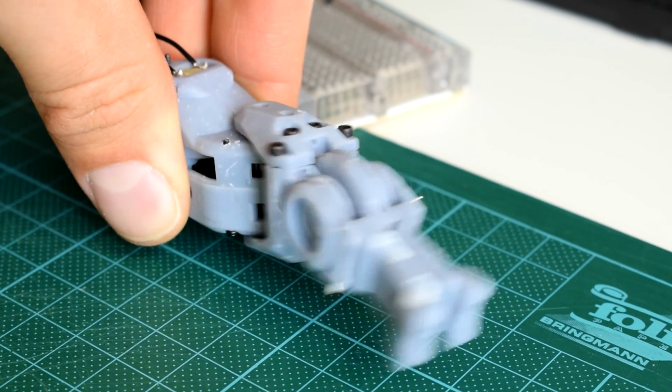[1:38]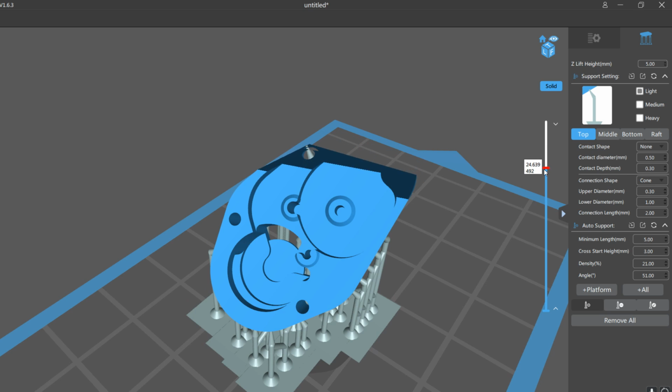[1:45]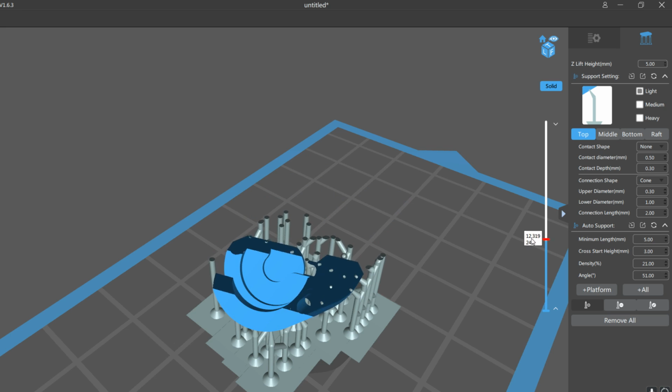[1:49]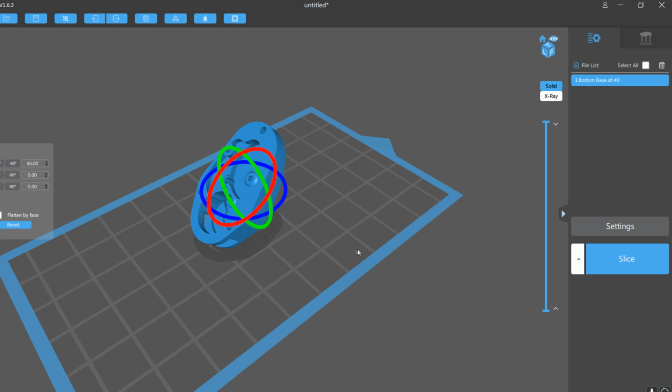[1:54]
Since I'm still learning to set up prints for my Anycubic Photon, I occasionally run into some issues like flattened areas or warping, but I think that this motor design is just about as small as you could realistically go with the gears this size, and it still all seems to go together fine just using automatic supports in Chitubox. If the design was any smaller, I think I'd need a more carefully planned out support structure to keep everything dimensionally accurate. But for now, I've been having lots of success just orienting the part on a 45 degree angle and just using automatic fine supports.
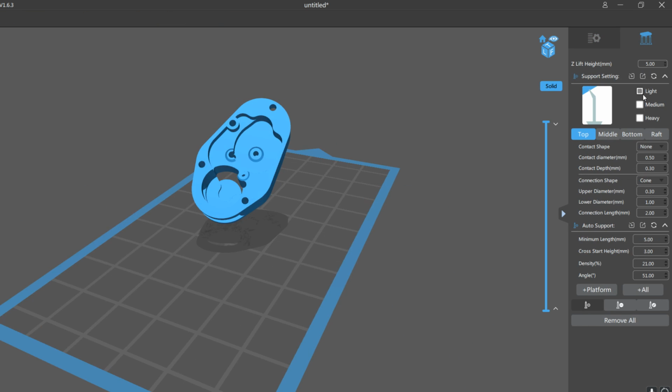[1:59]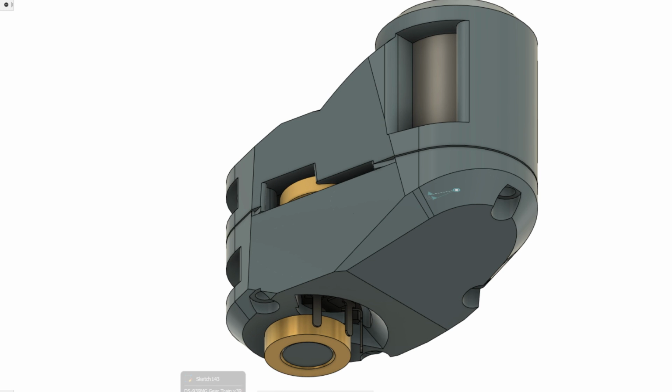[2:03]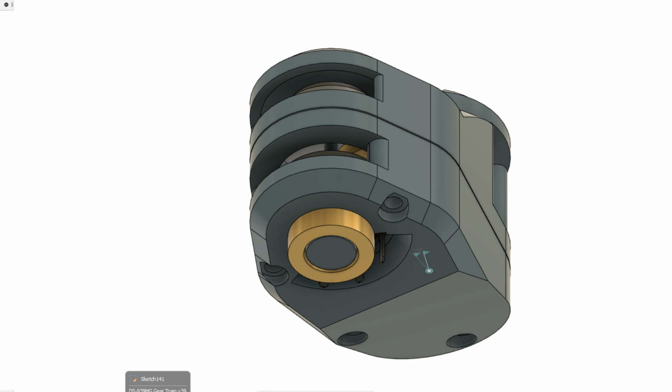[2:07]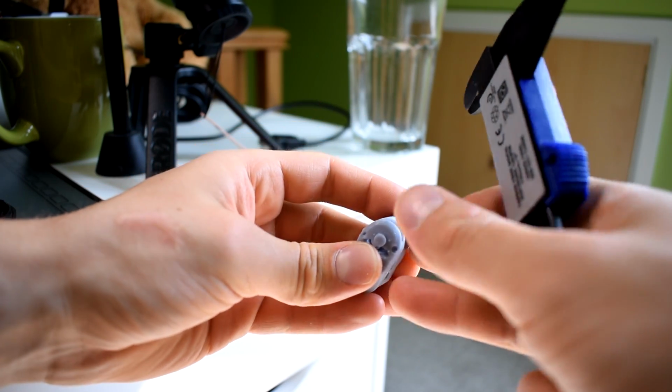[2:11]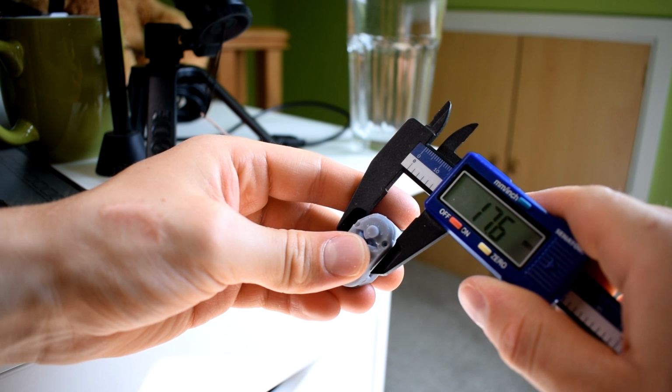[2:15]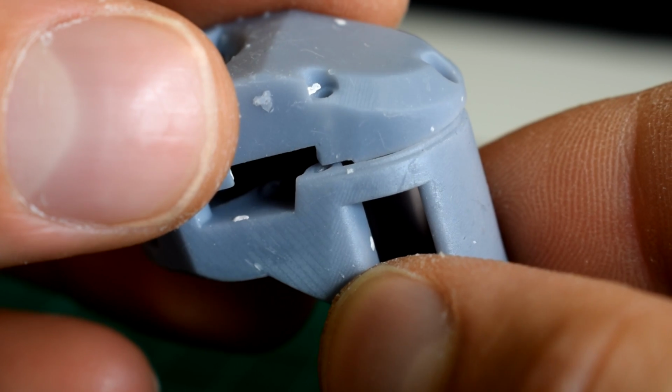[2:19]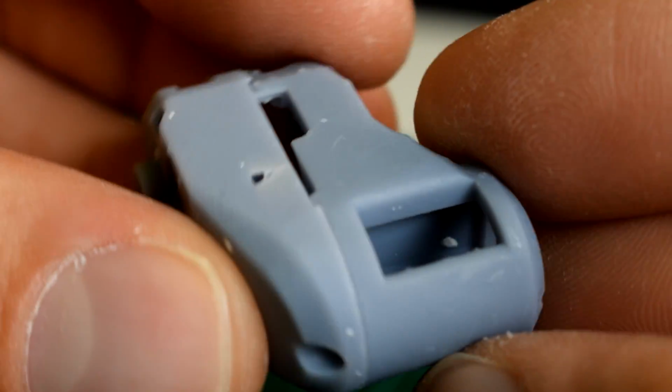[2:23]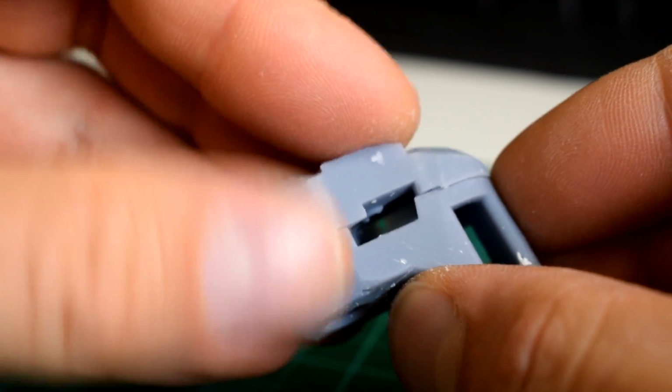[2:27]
Another modification that I made was to slim down the motor. My target for the width of all the motors in the palm was 80mm, so for that reason I needed each motor to be roughly 18mm to allow for movement at the MCP joint as well as the CMC movement of the metacarpals. I was able to shave quite a bit off the sides of the design, but it did result in some very thin walls, just a little too thin to print properly, so in the current design there are some gaps in the housing.
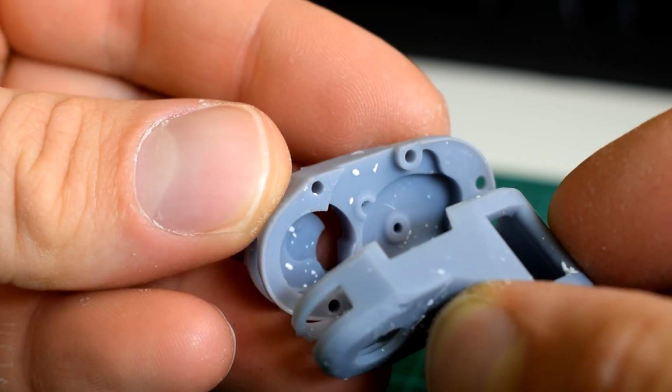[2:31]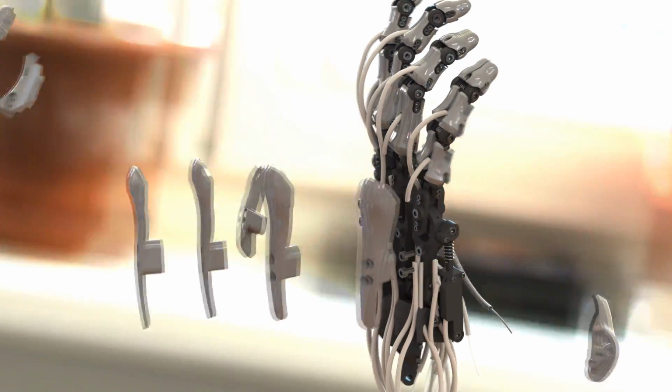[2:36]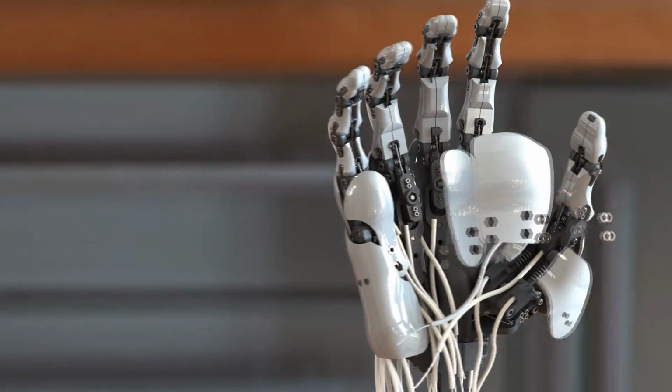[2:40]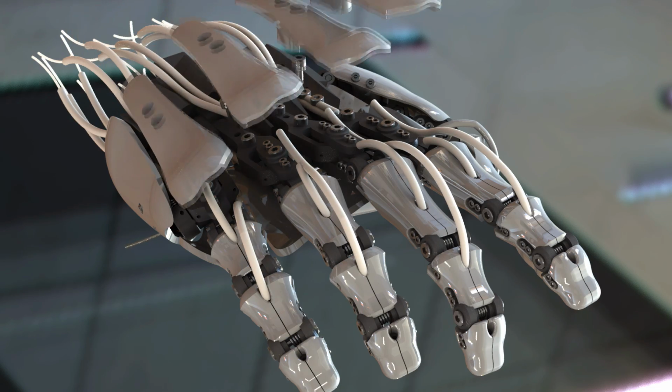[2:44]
Ideally, it would be sealed to keep dust out, but since I'm not sure yet how I'm going to arrange all the shell components, I think that this design is appropriate for now. To be clear, my intention is to design the skeleton, or the inner mechanical frame, first, and then add the shell components later on, which should also help with wire management.
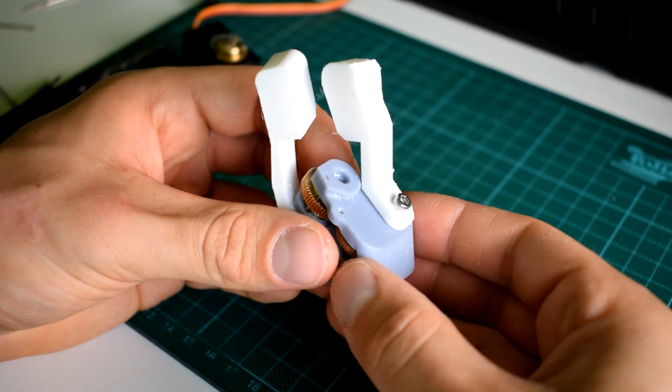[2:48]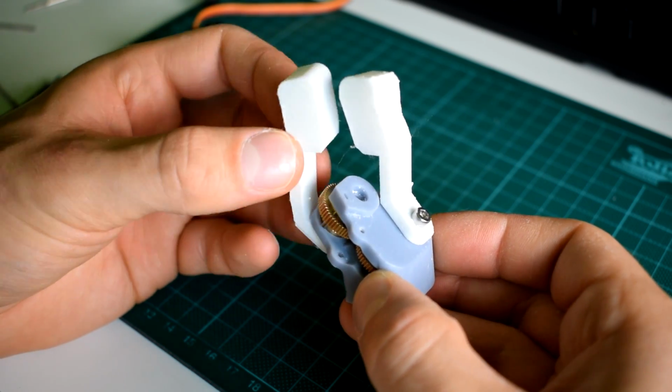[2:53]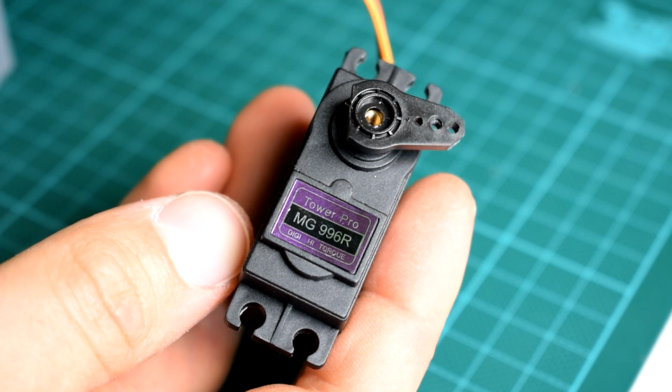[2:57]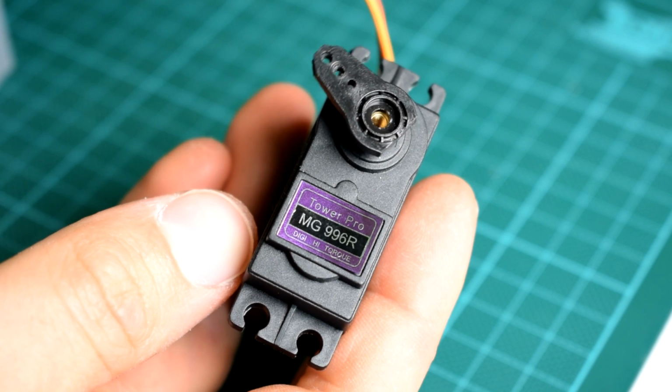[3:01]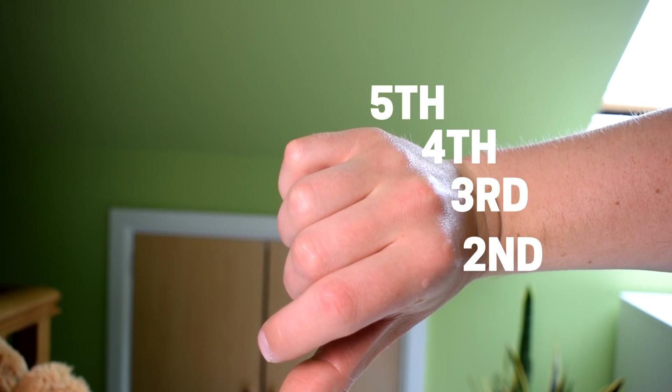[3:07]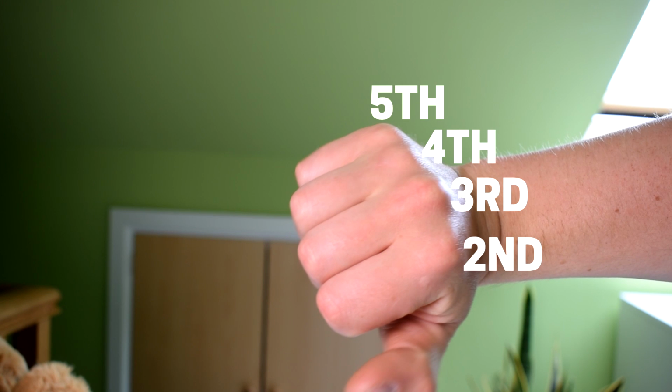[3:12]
So now onto the gearbox for the 4th and 5th metacarpal bones, which move at the 4th and 5th CMC joints. I had some MG996R servos which I've had for a long time. They were very, very cheap on AliExpress, so I don't feel bad taking them apart and using them for components. As I mentioned before, the 4th and 5th metacarpals have a range of motion of roughly 10 degrees and 30 degrees respectively, and they rotate on a diagonal axis across the palm.
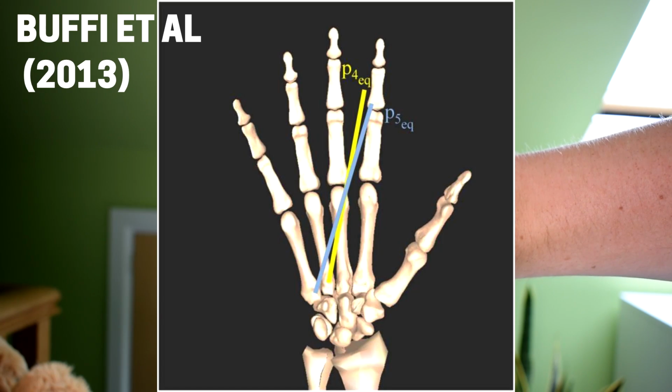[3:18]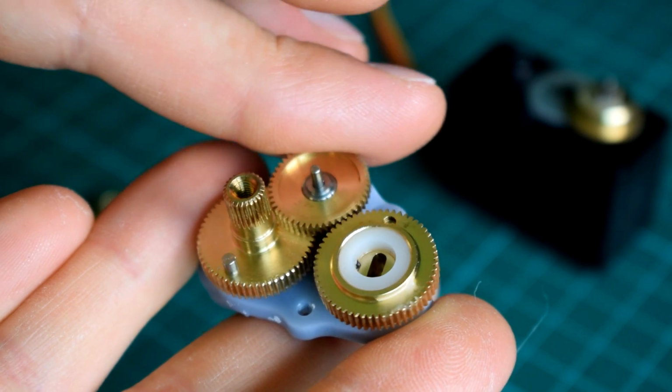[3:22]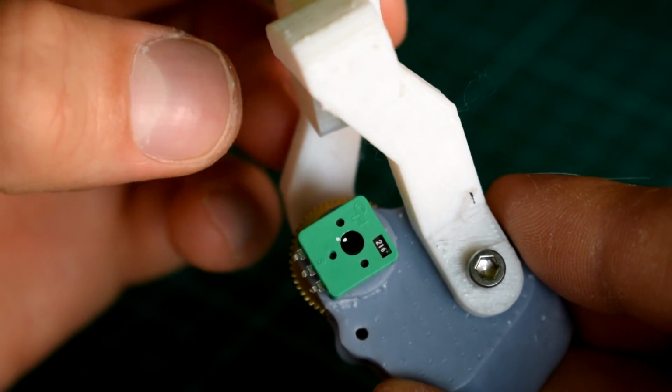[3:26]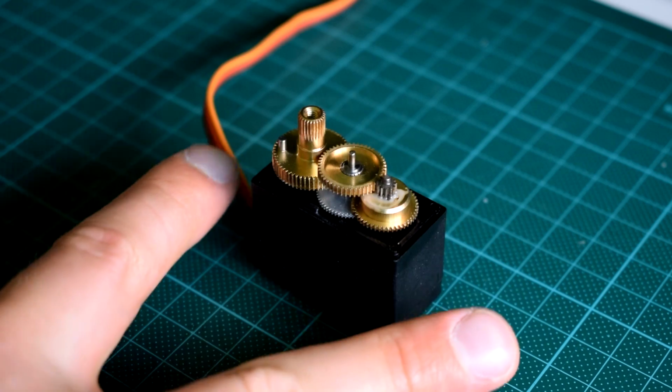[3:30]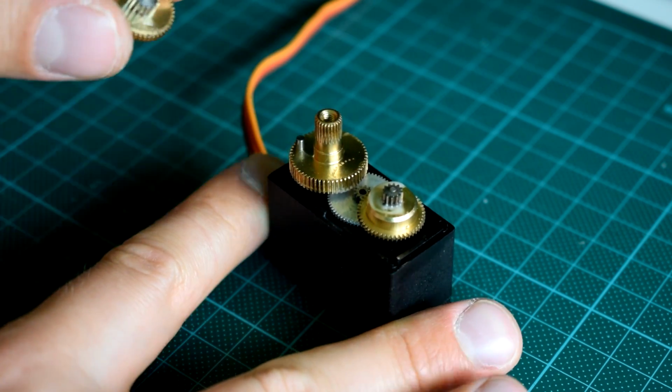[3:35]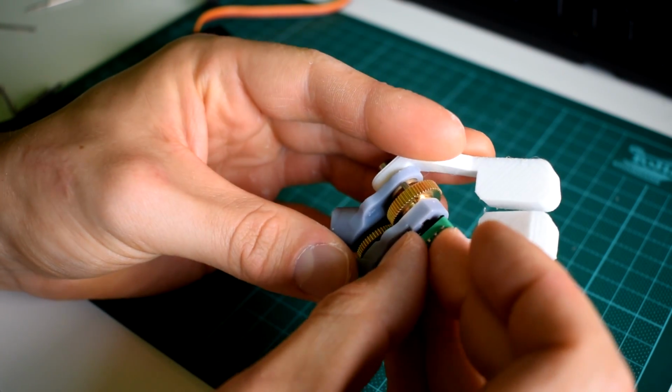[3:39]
In the simple gearbox I made, I was able to get a ratio very close to 3 to 1, which gets us conveniently to the 10 and 30 degrees of motion we need. I used two output pinions and one of the penultimate gears from the servo, which is super useful since I have a way to discreetly attach a potentiometer directly to the output pinion, and I also have some areas that I can screw the metacarpals into easily.
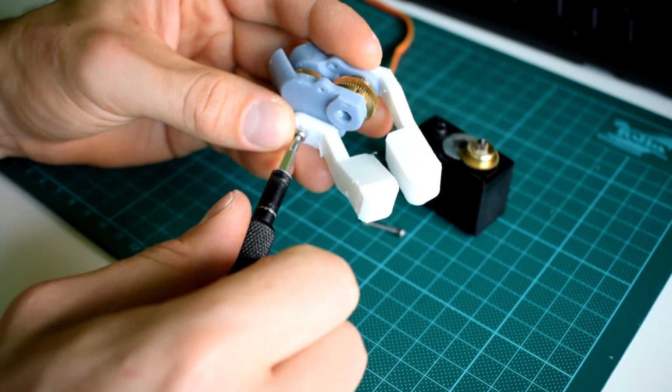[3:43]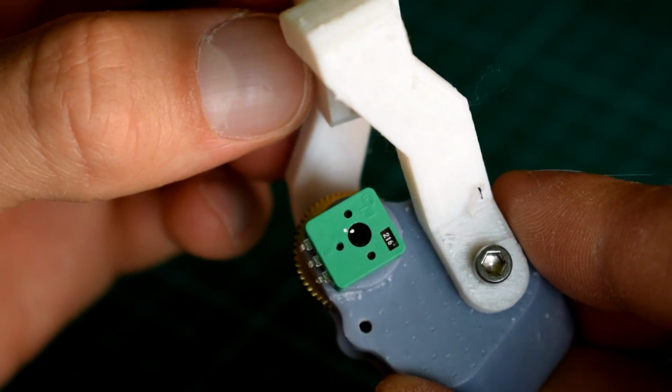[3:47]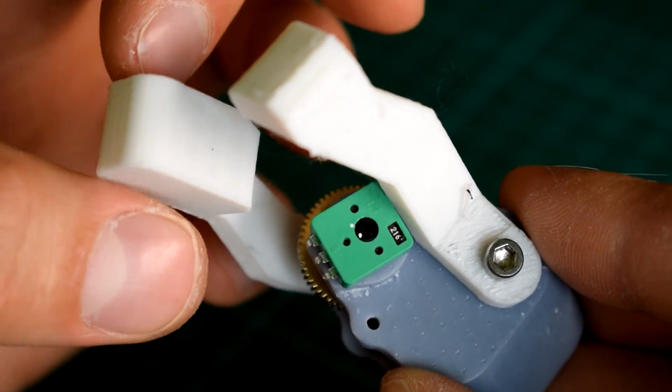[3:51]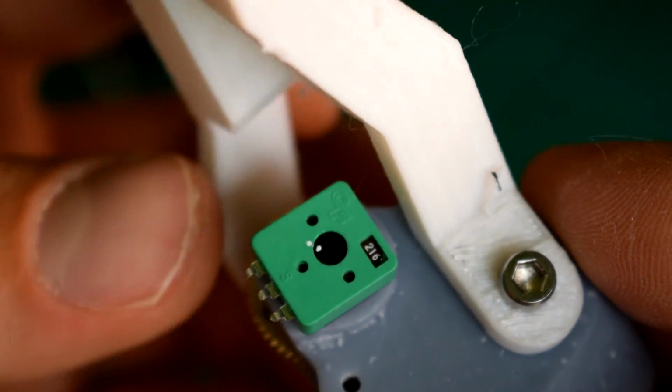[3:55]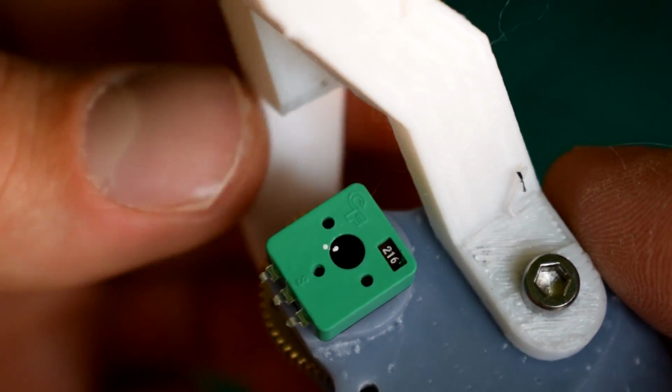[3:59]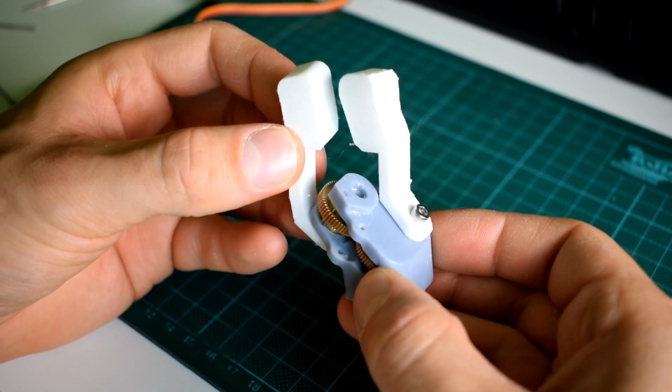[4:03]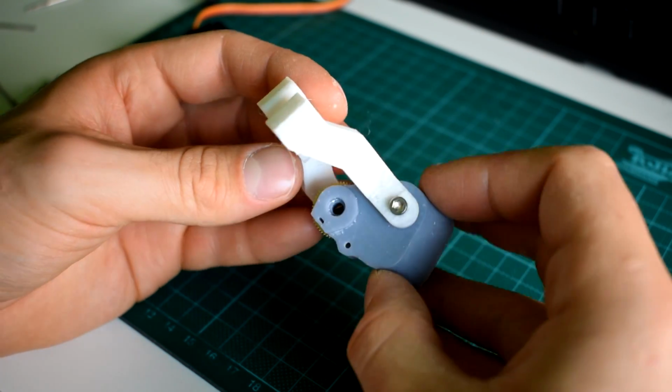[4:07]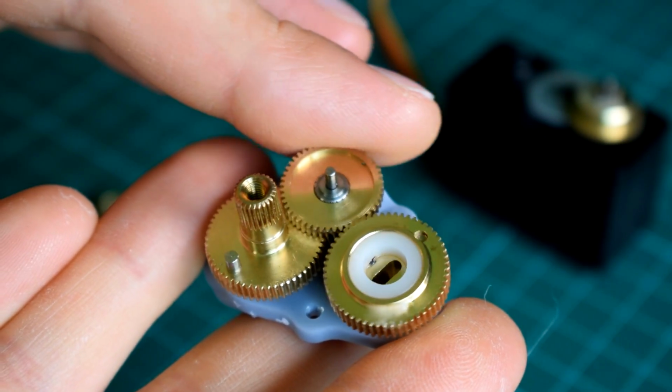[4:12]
Now it's important that I take the potentiometer reading from the fifth metacarpal as opposed to the fourth, because it moves three times further than the other, so that will give me a broader range of values through the potentiometer and make the reading more accurate. I also want to mechanically drive the fifth metacarpal as opposed to the fourth, because it will require less torque to effectively drive, and that's because the gearbox increases the torque from the fifth to the fourth metacarpal by reducing the range of motion.
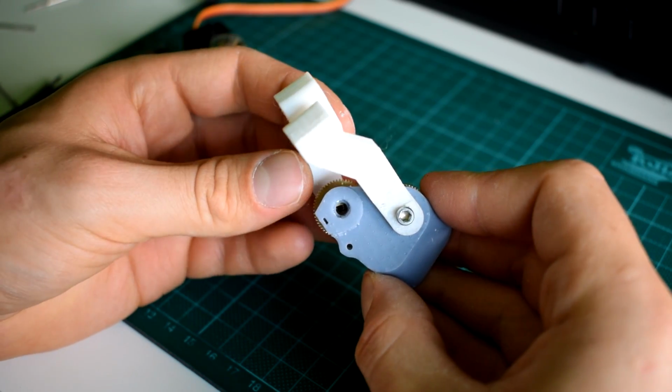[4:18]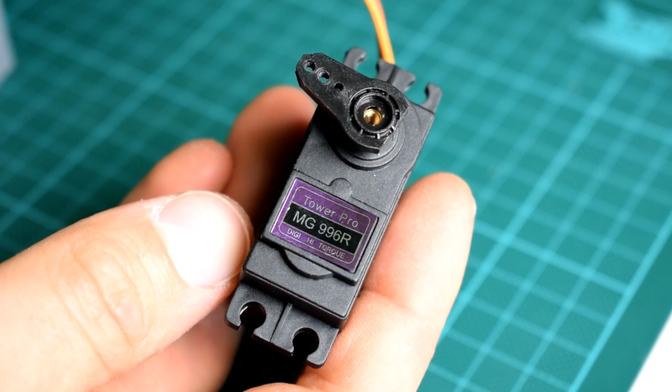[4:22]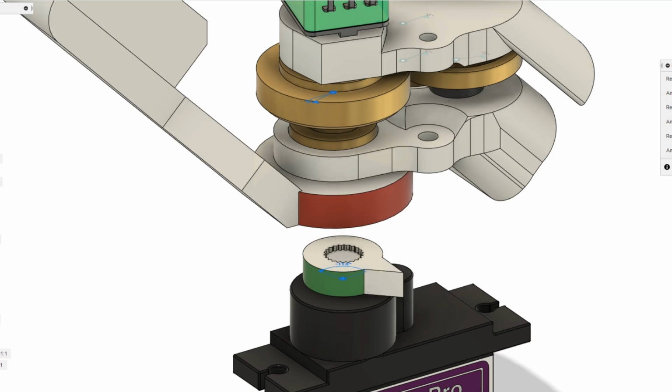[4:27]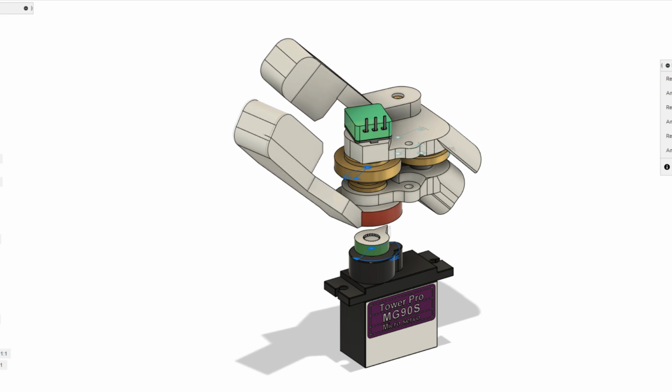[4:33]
In the same way, since I know that I only need 30 degrees of rotation in the fifth metacarpal, and the servos that I'm using will likely have 180 degrees of rotation, I can use a very small pulley at the servo compared to a much larger pulley at the joint itself, and doing that will greatly magnify the torque that I'm able to get out of the servo motor.
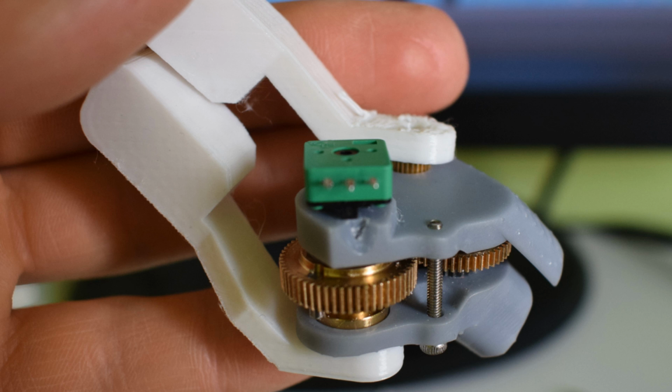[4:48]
So I still need to add a pulley to drive this component, and a way to route the cable actuation system, and critically I also need a more robust pivot system. So looking at the current design, it's easy to see that any force applied in this direction is going to put a very large moment on the gearbox and the point at which it attaches to the metacarpal component.
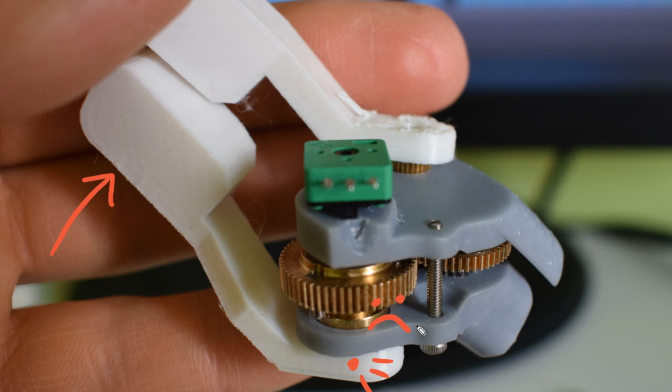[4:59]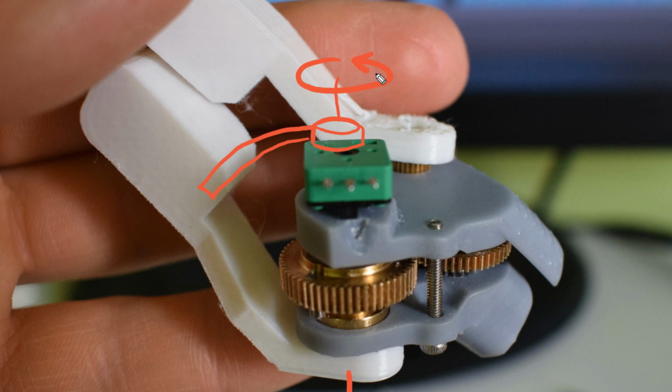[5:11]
The solution would be to add some kind of arm at the top here so that it has two pivot points along the same axis. I'd obviously need to do this for the rear one too, so it could get tricky figuring out how to have them all so that they don't collide as they move through the ranges of motion.
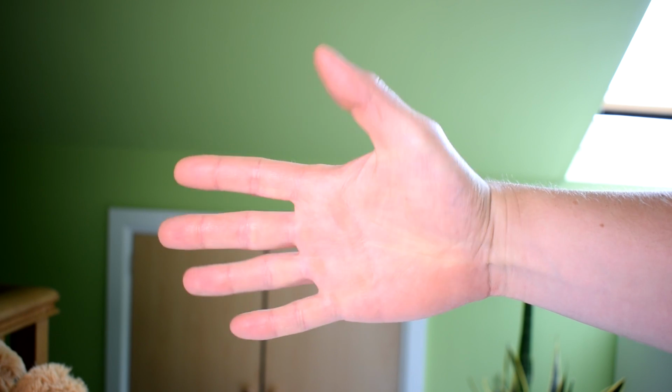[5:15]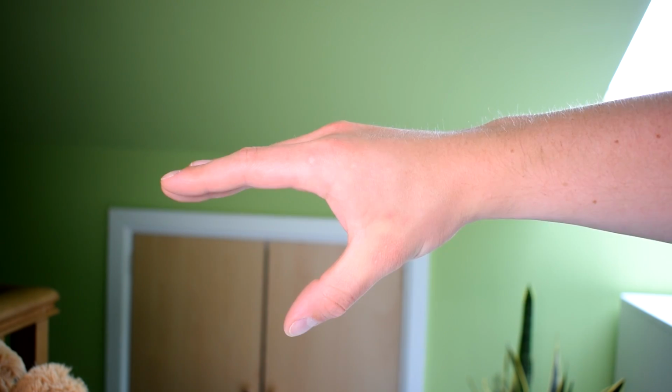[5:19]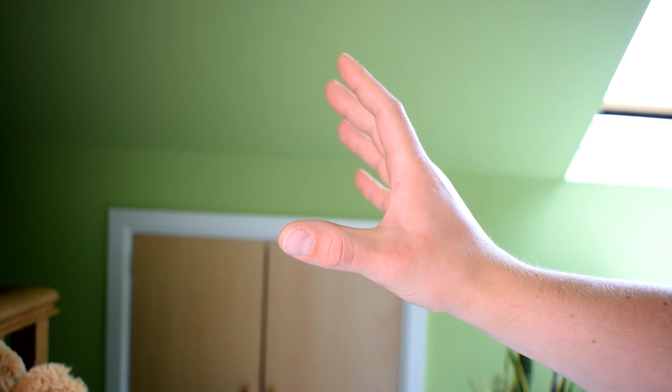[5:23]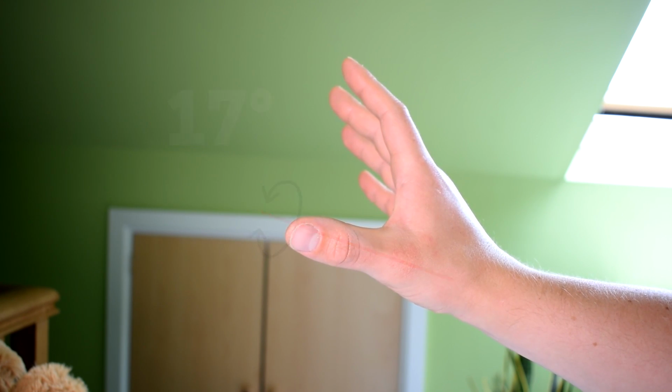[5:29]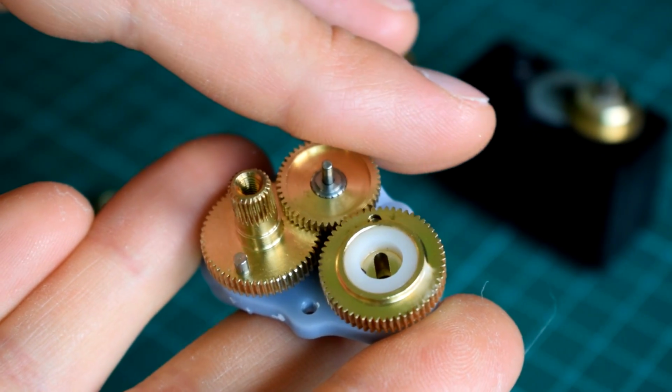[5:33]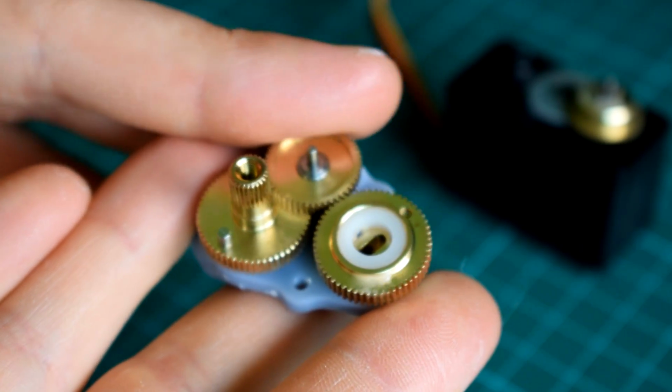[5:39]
So looking at the thumb component now, as I mentioned before, the thumb's metacarpal moves in three different axes, the most awkward of which is the axial rotation of the thumb, which is not something you have conscious control of. I think it would be possible to create some kind of gearbox system to produce this motion, but I decided to omit that particular degree of freedom for this prototype because I think it can quite easily be made up
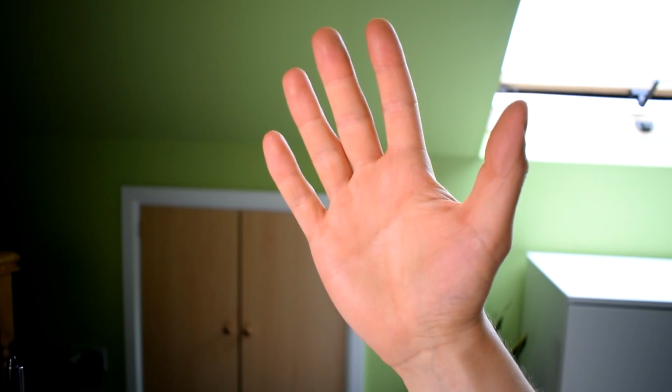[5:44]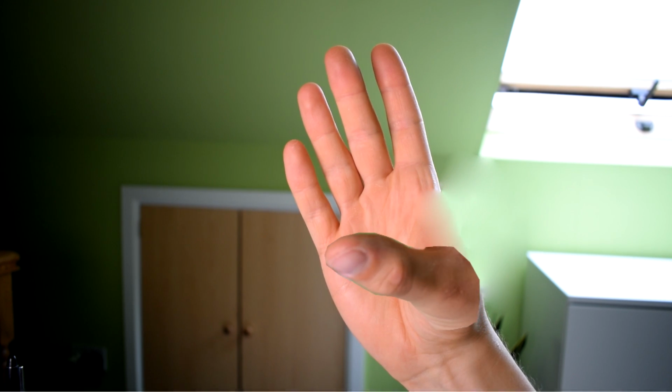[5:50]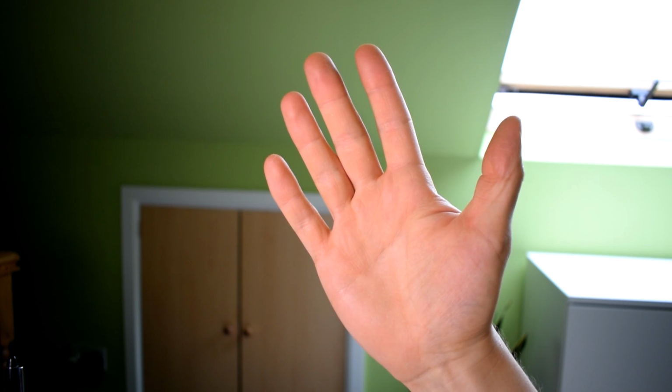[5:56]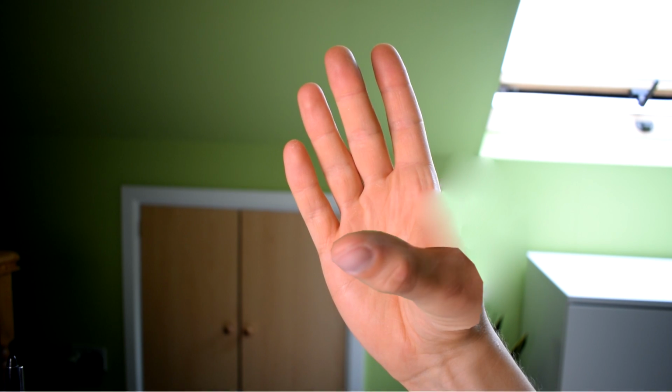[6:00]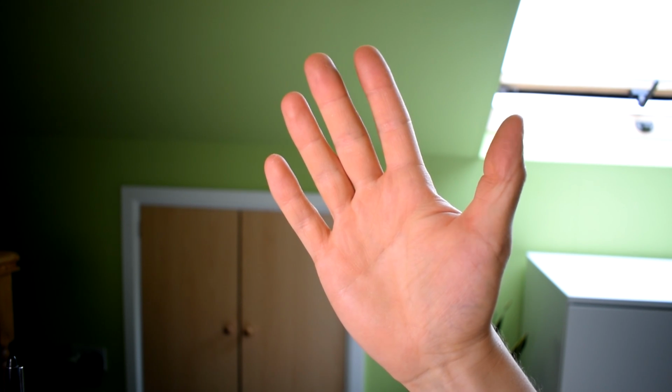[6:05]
for with other tweaks. Like for example, the thumb may only have around 50 degrees of motion this way in a real hand, but by increasing this range of motion, we can have a more dramatic change in the direction of the thumb, which I think effectively simulates axial rotation. Realistically, it's probably not a particularly useful range of motion anyway, so I don't think we need to worry too much. But by increasing this range of motion slightly, which will be very easy to do in my design, I think we will still have the same level of functionality that a real hand would have.
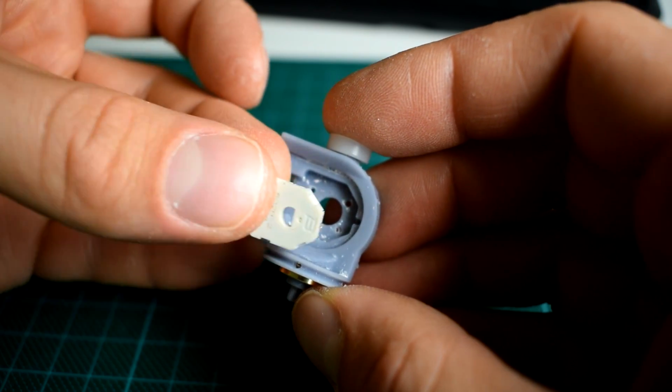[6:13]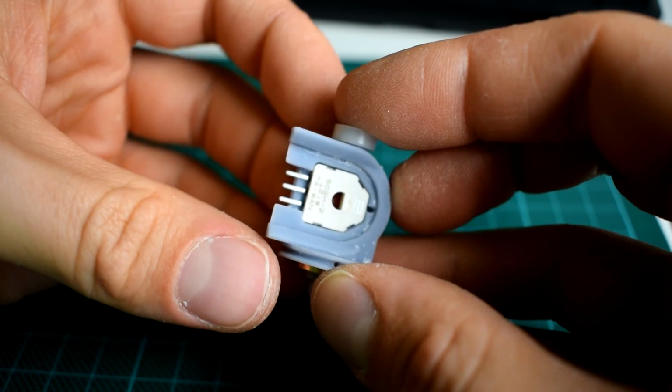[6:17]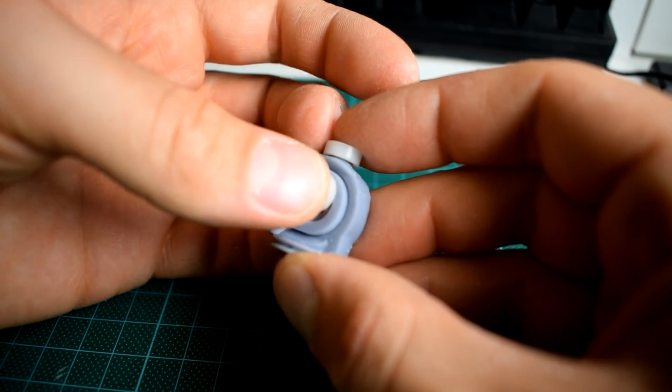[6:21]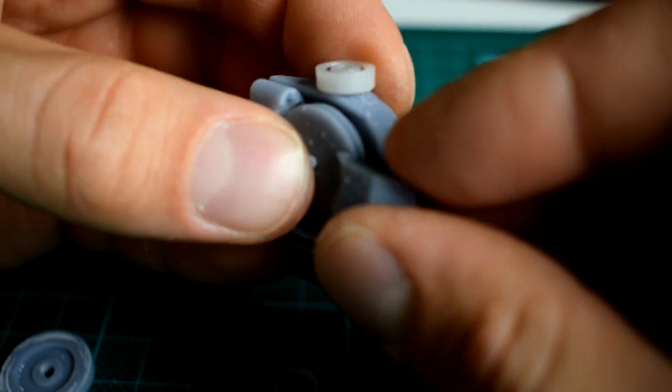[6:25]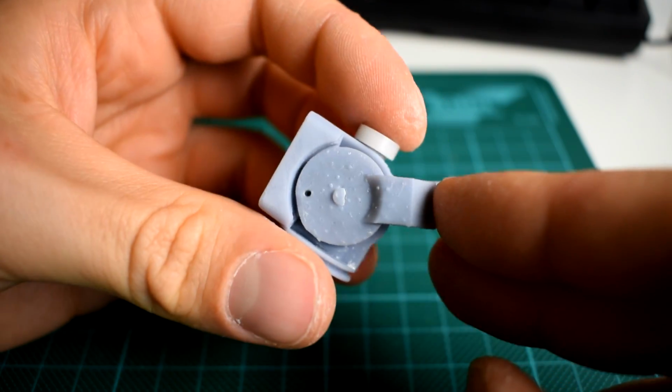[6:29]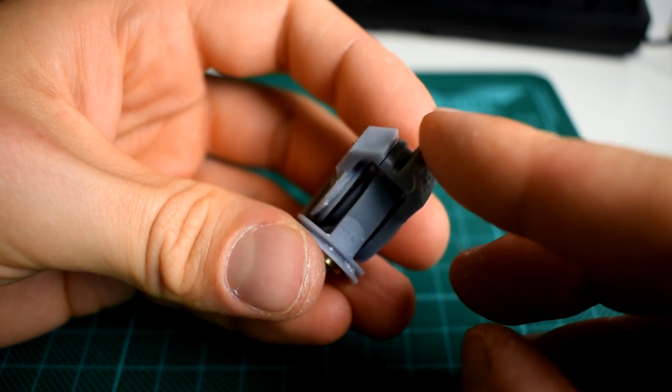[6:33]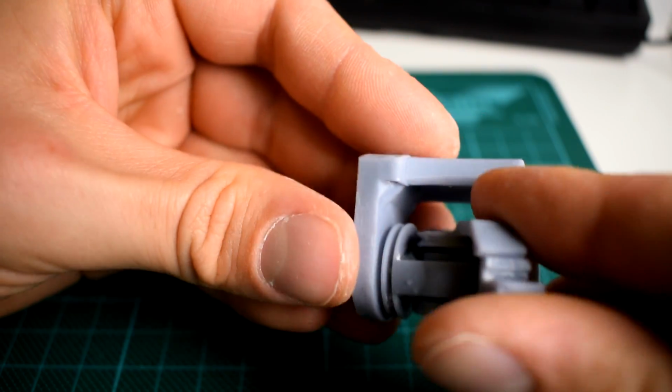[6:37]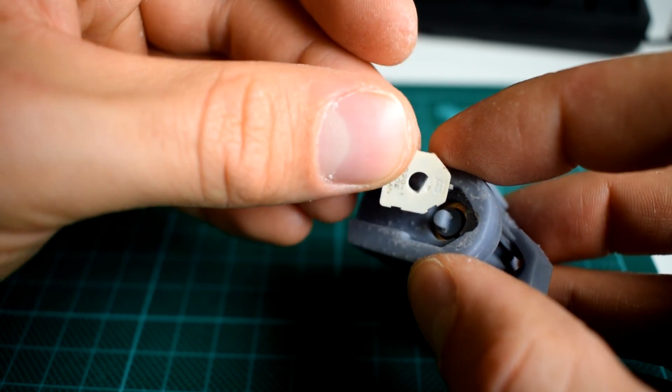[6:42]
In the thumb's CMC component, we have a slim potentiometer sandwiched between two bearings, which take any force off the potentiometer as well as bearing loads on the thumb itself. We have a pulley on one side, which is how the part is driven, and a disc on the other side, which looks like a pulley, but this part actually just sits against one of the bearings and accepts the central rod. The entire assembly sits on another pulley for the other axis of movement, which has bearings and a potentiometer just like the other axis.
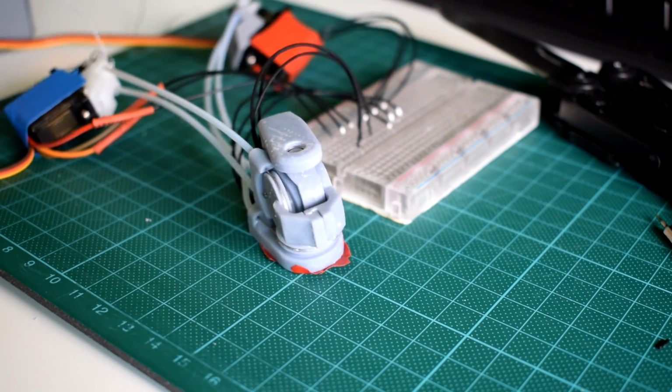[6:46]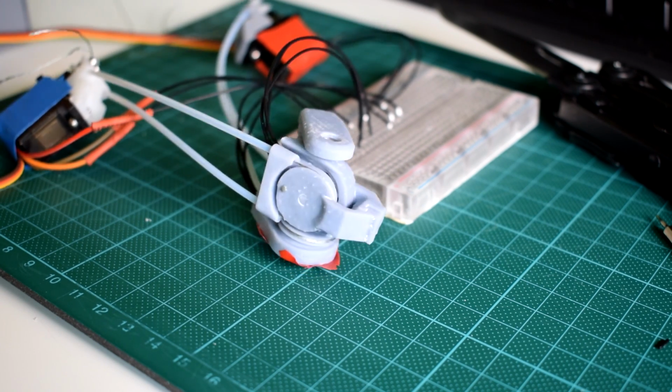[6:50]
Using the same setup as before with MG90S servos and a quick pulley system, I was able to test it out and it appears to work fine, although clearly this part needs more refinement.
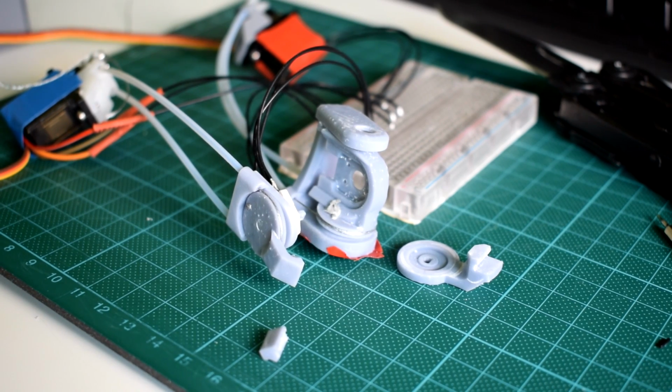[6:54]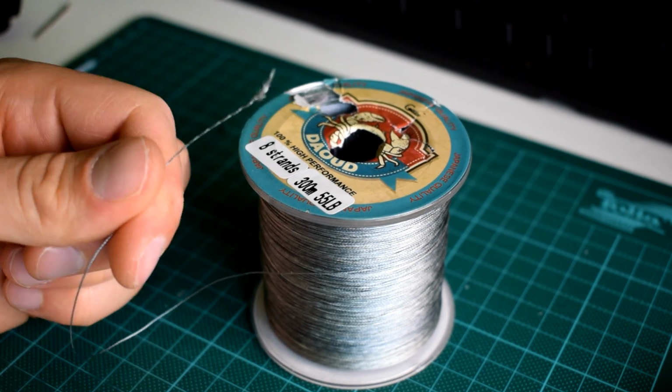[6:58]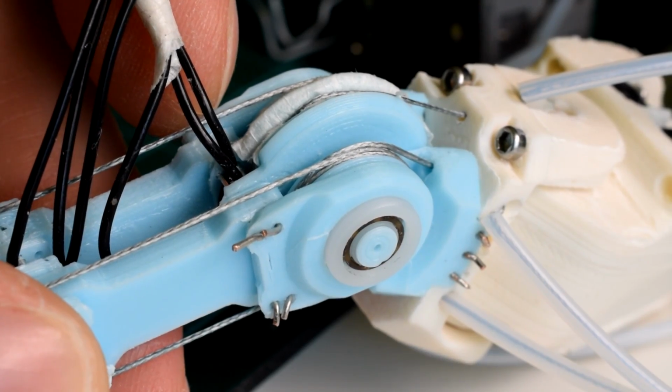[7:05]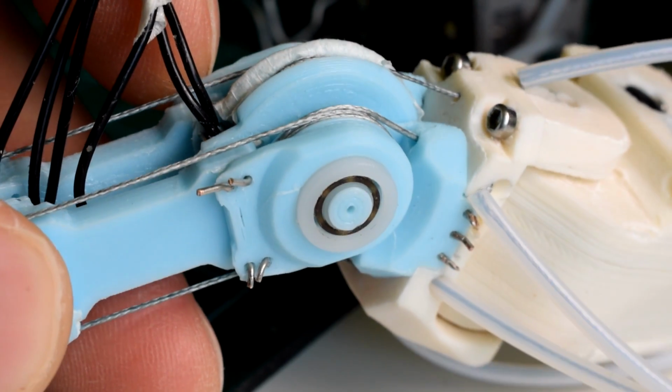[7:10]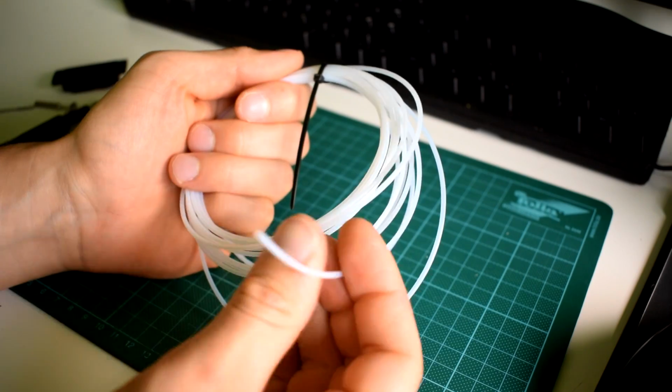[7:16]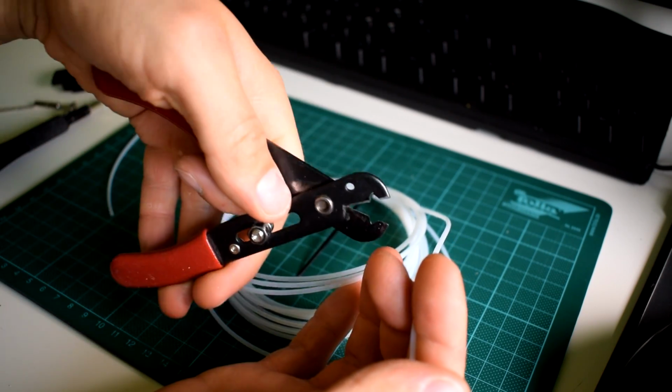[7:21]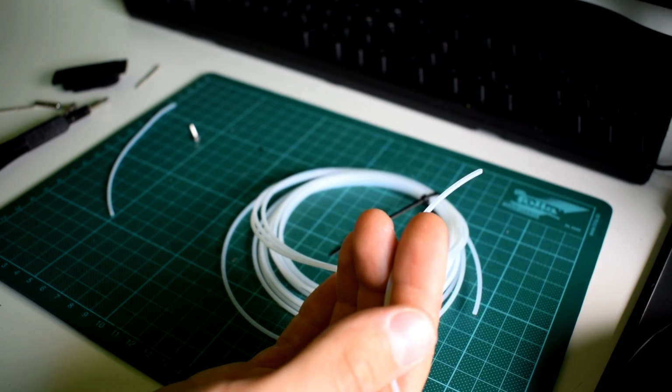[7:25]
And just a note, because some people have been asking lately, the material that I'm using for the inner cable is ultra high molecular weight polyethylene, which is the same thing as Dyneema, which quite a few bionic hands use. It's very strong, but it's also very inextensible, and it's also used as fishing wire, and that happens to be what I bought it as. And then for the outer cable, I'm using PTFE tubing, which has the advantage of being very low friction and sort of self-lubricating in a way, and also quite incompressible.
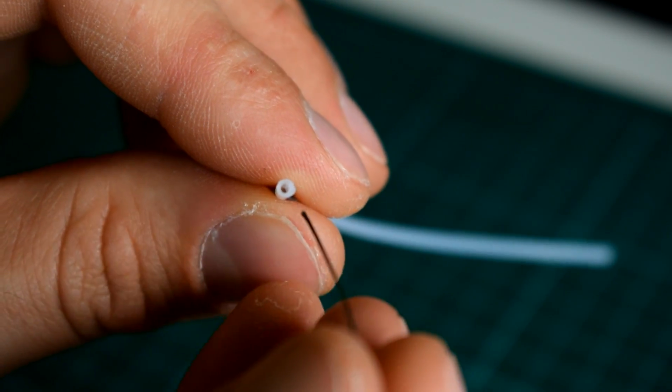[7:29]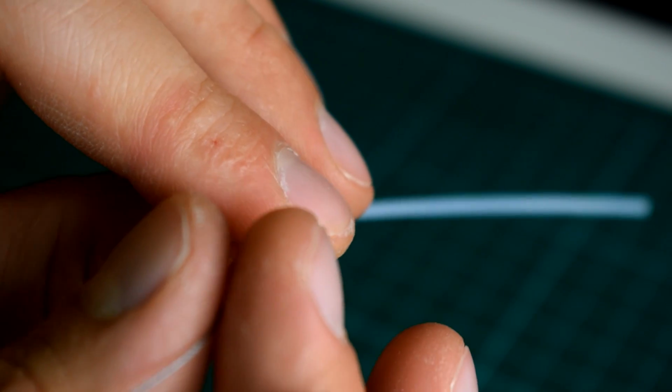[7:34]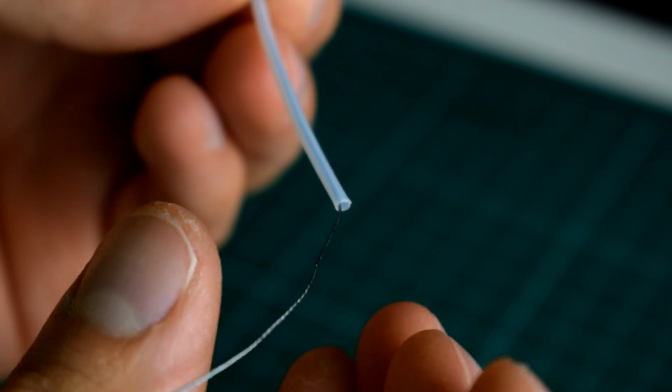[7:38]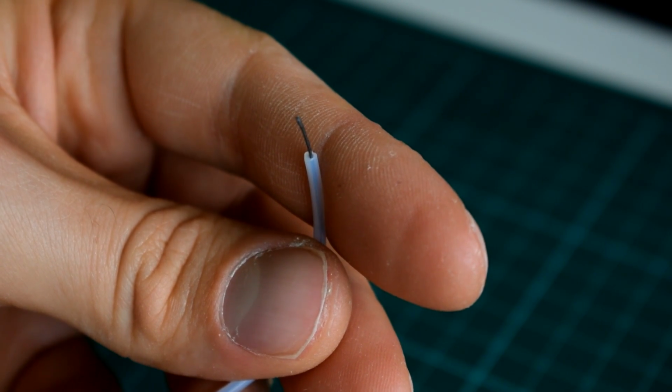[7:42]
Some people have also noted that there is quite a big difference between the inner diameter of the PTFE tubing and the diameter of the inner cord. And that is a little bit of a problem, but at this stage I'm not worrying about it too much because it makes it very easy to assemble the parts to make quick prototypes like these.
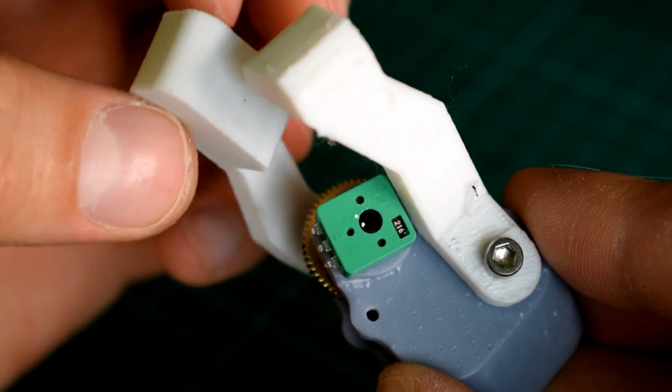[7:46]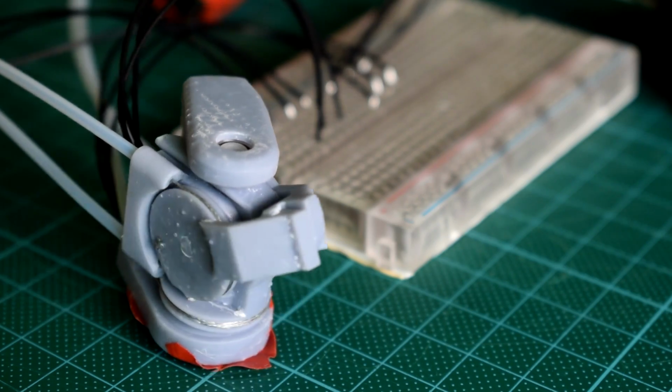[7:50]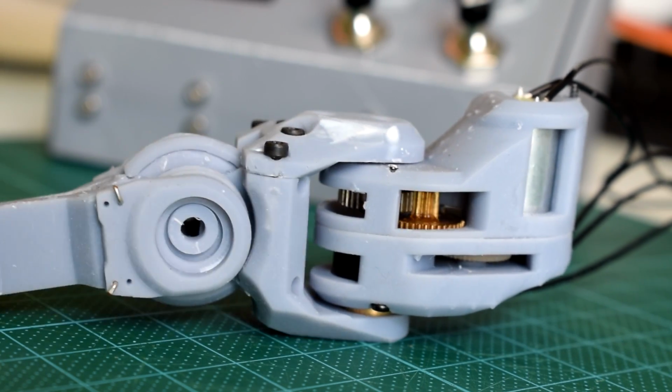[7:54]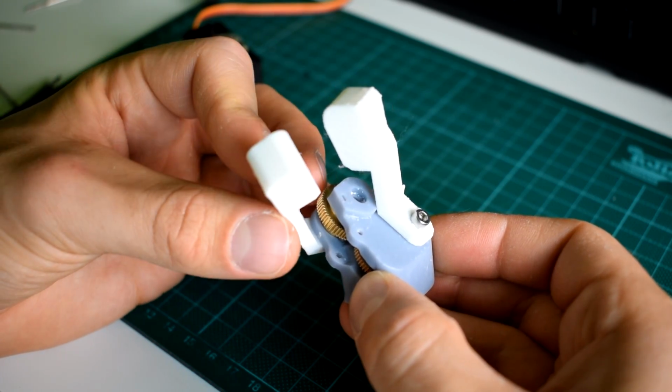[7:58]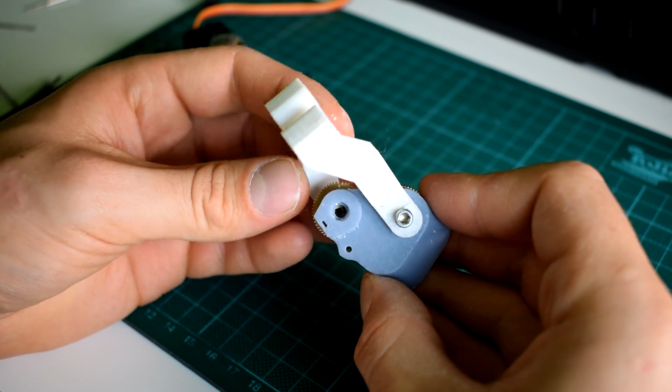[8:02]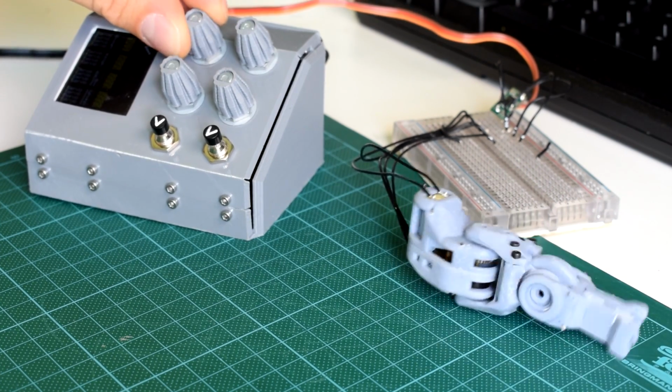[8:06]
So to sum up, I'm pretty happy with all of these components at this stage. Up to now, I've just been testing the feasibility of these systems, essentially just trying to figure out what I can get away with when it comes to resin printing. Although these components have issues and factors which need optimizing, I'm happy enough with them at this stage that I'm going to use them to build a fully integrated palm once I have a suitable wrist design.
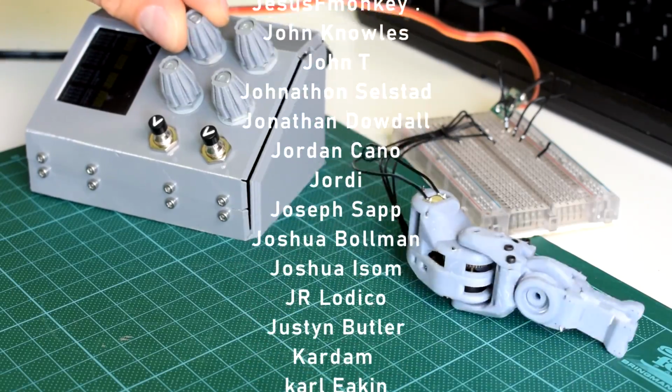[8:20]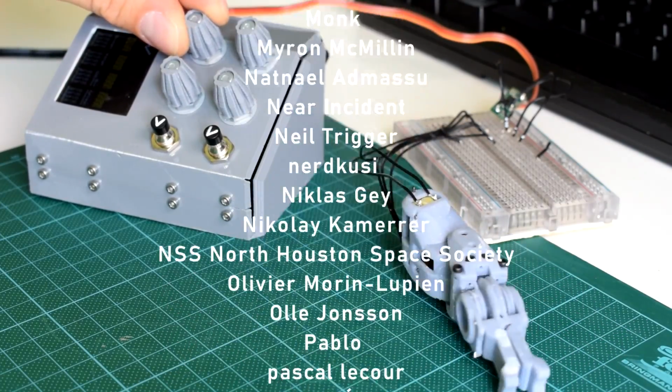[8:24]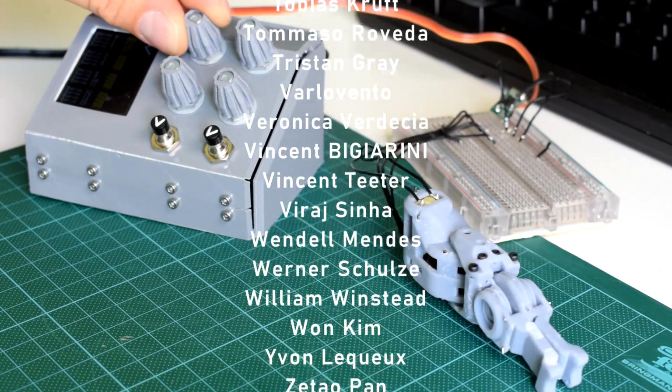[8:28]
In the next video, I'm going to be going through the design of the wrist and how I'm linking all of these parts together to make the entire palm.
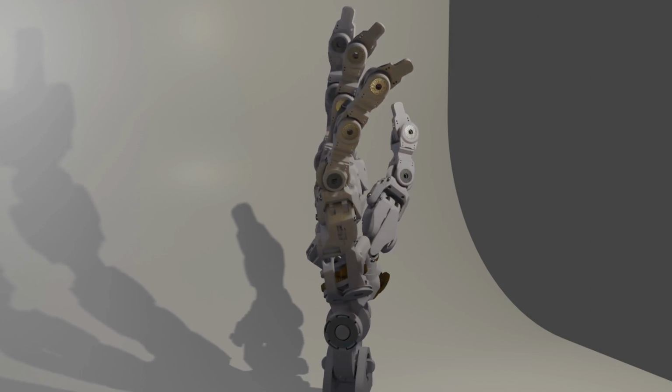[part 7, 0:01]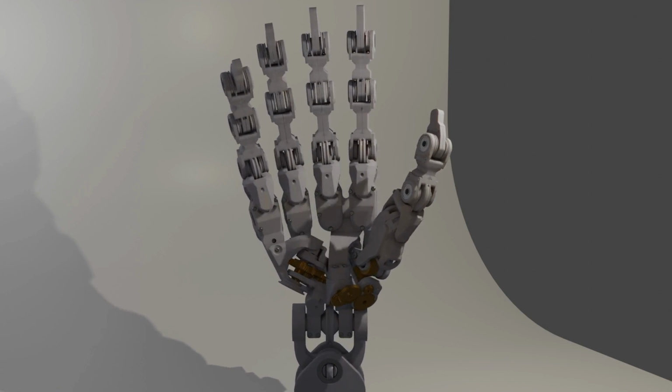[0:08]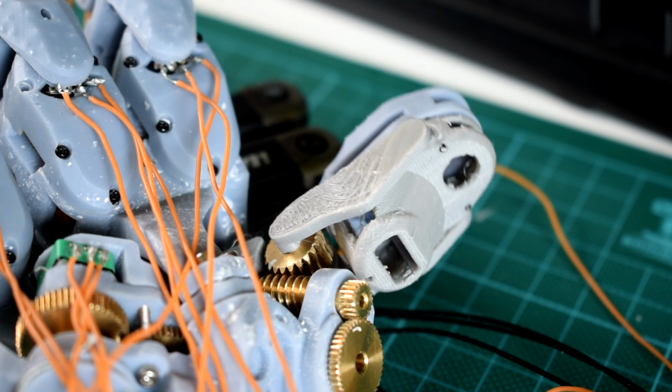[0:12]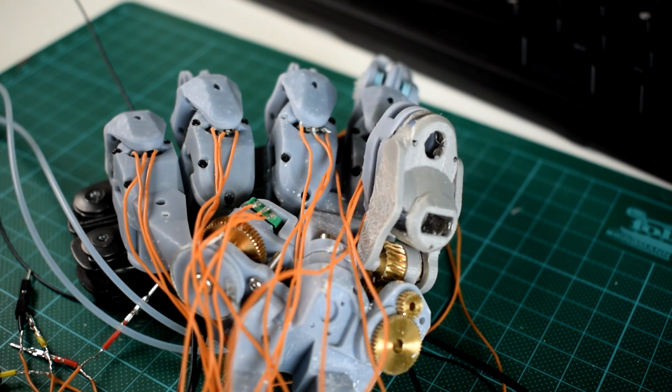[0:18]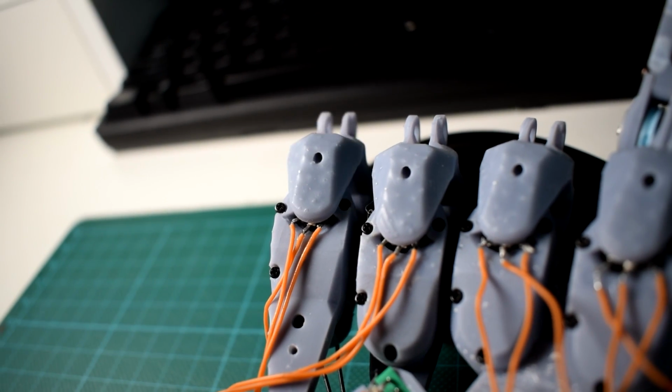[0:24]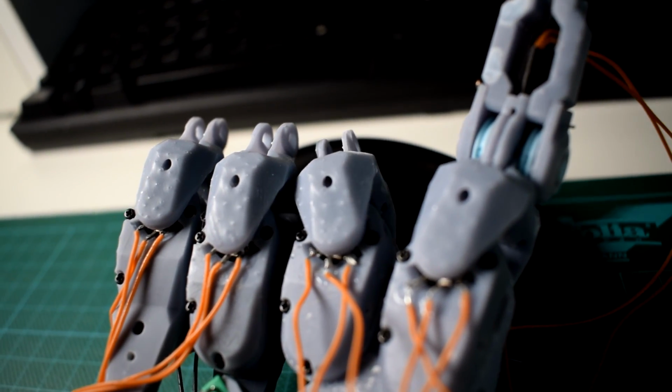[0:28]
I now have a relatively solid base designed for the bionic hand, but there's still a lot to do. You guys might have noticed that my upload schedule has been a bit less consistent lately, and that's because, for personal reasons, I'm going to need to devote a lot more time to a traditional full-time employment job. So for the time being, my output is going to slow down and be quite inconsistent and unpredictable.
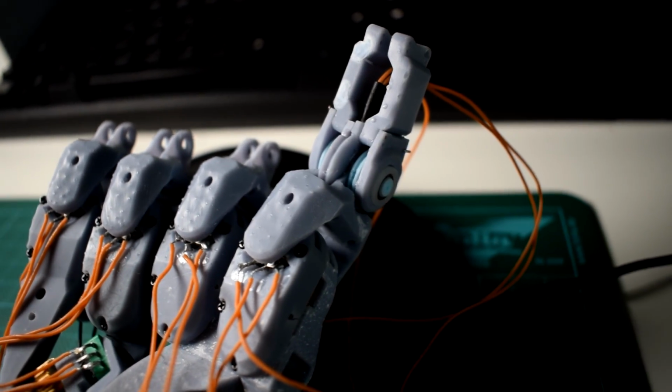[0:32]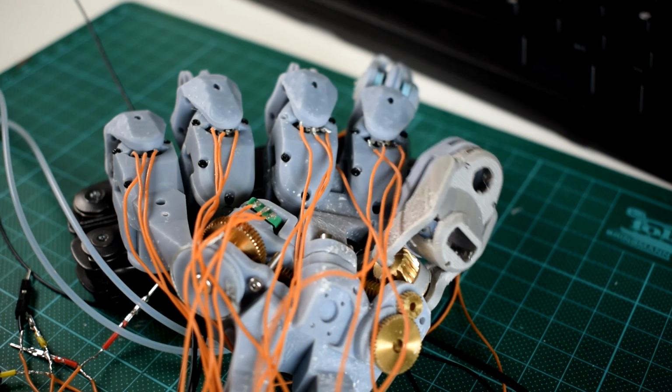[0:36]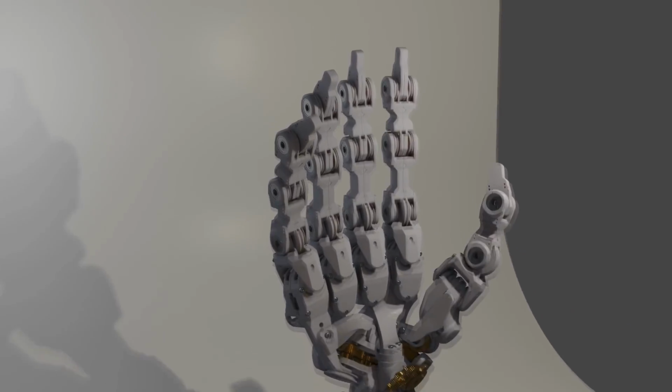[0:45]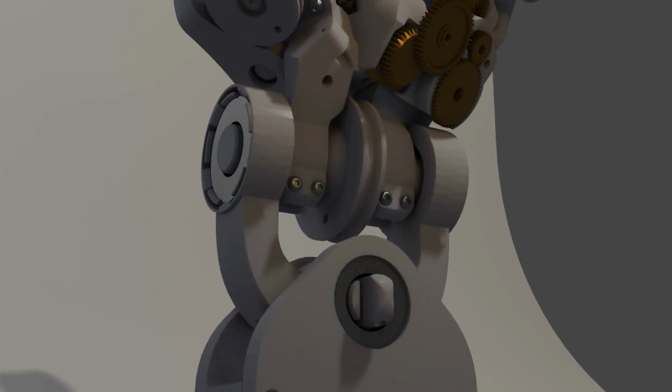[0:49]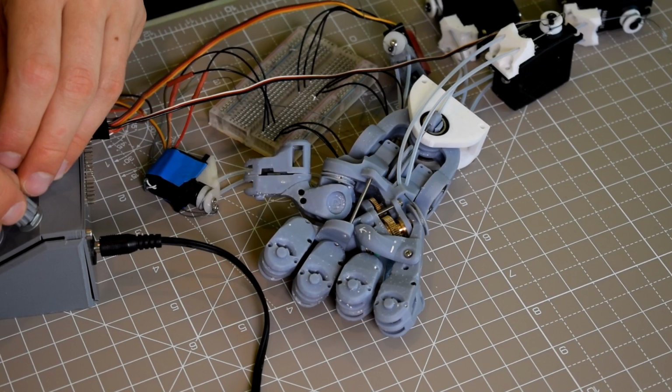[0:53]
But thankfully, I have a whole lot of my bionic hand completed, and I want to take this opportunity to try and make this project as accessible and open source as possible by getting everything on GitHub. And also later in the video, I'm going to go over everything that needs doing. So this project should be really easy for anyone interested to just pick up and have a go at, experiment with, and do whatever you like with.
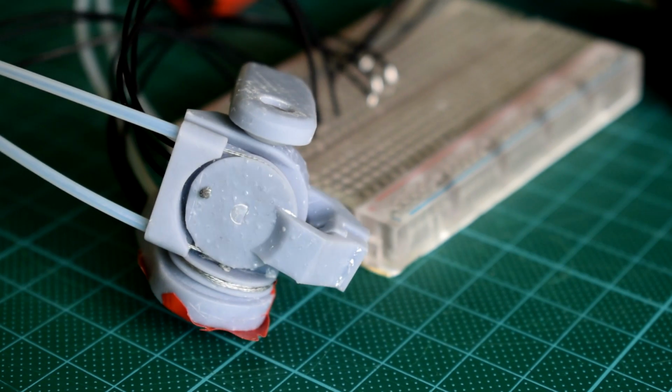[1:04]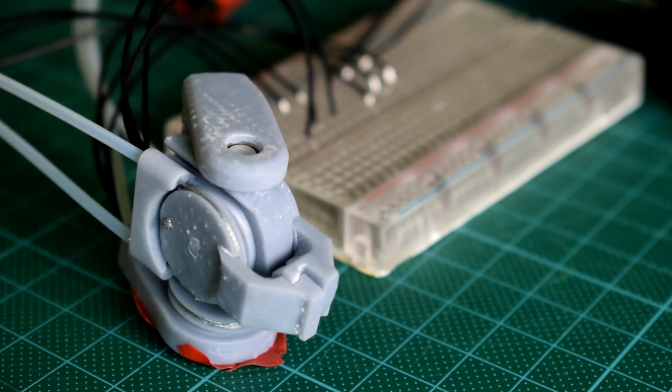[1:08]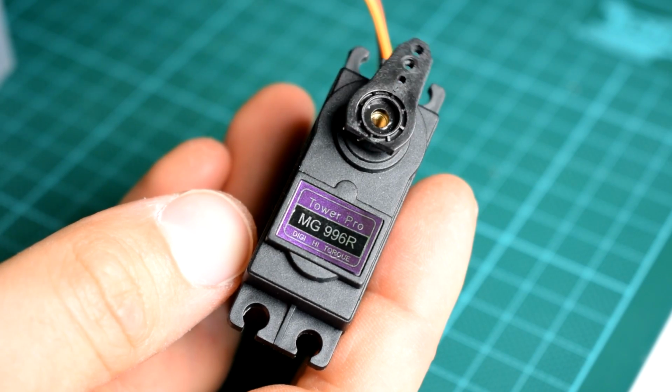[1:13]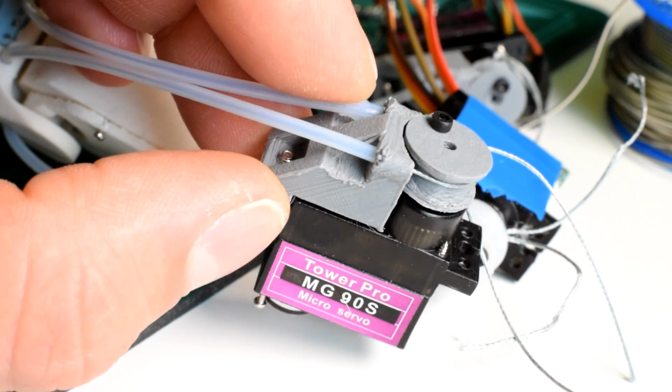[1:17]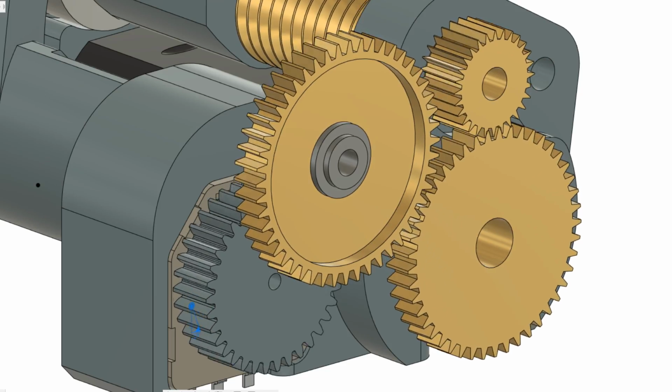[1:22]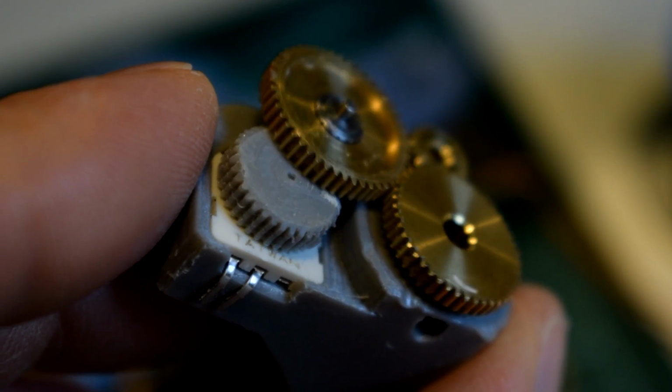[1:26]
So first of all, I've fixed most of the issues that I found in the last video. They were mostly just minor oversights, but the biggest thing I was unhappy about was the thumb's CMC mechanism. Now, as this project has been designed to be accessible, it's meant that up until this point I've only used very easy to acquire components, and I've stuck to either direct drive or servo actuation or cable mechanisms. The decision to use this mechanism for the thumb represents a kind of split in the design decision making, because it is a little bit harder to acquire some of these components.
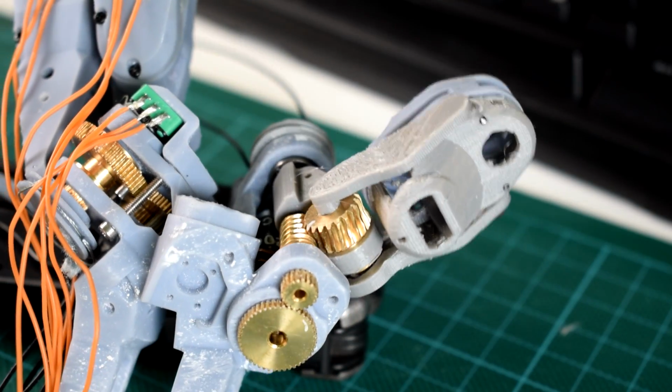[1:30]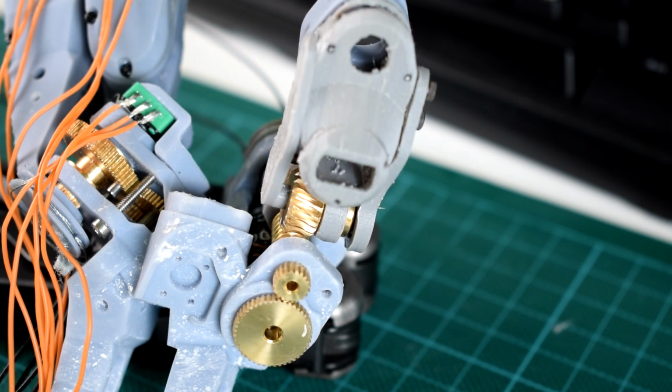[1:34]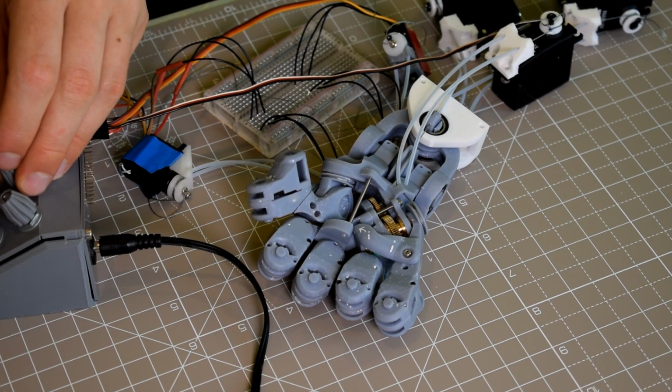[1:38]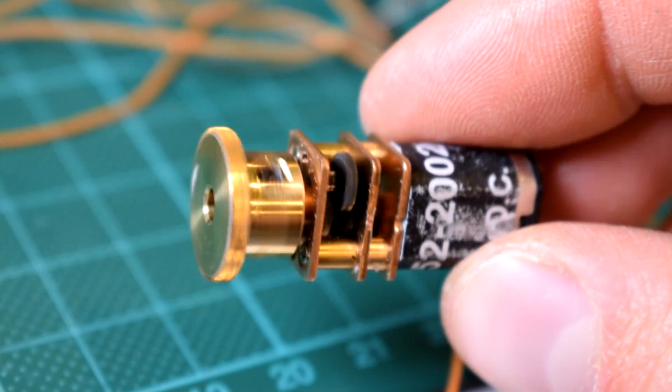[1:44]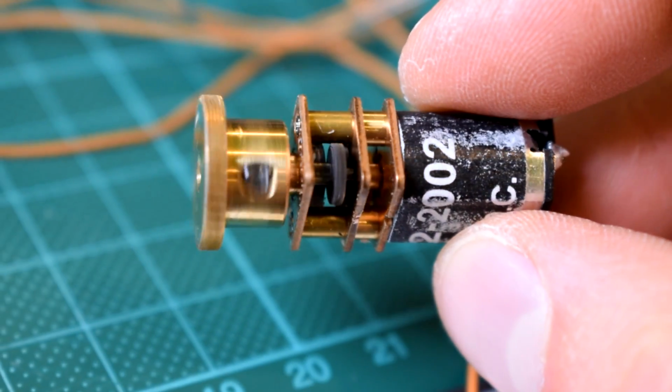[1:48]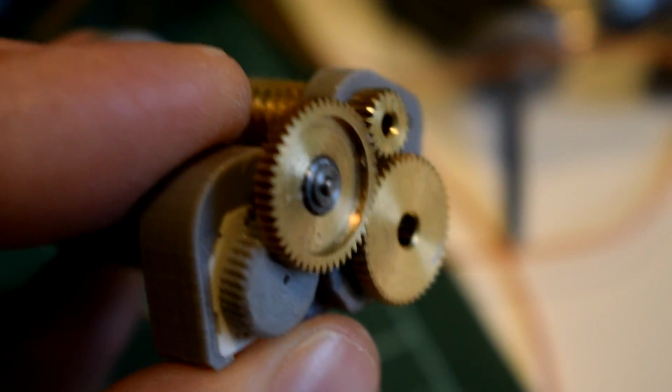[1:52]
But without using a mechanism like this, it will be very difficult to have all the inputs and outputs of the joint stay stationary. I've uploaded the old version of the mechanism too, so if you think you could make it work with that initial design, then feel free to take the files and do what you will with them. So with the new thumb mechanism, the main actuator is this RS Pro DC gear motor, which, being 6 volts, can happily be used in the place of an MG996R servo motor.
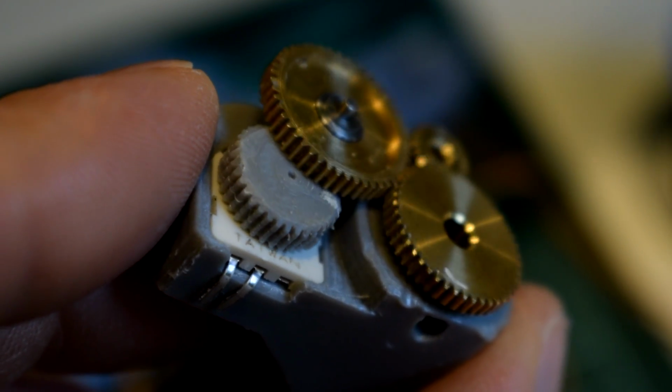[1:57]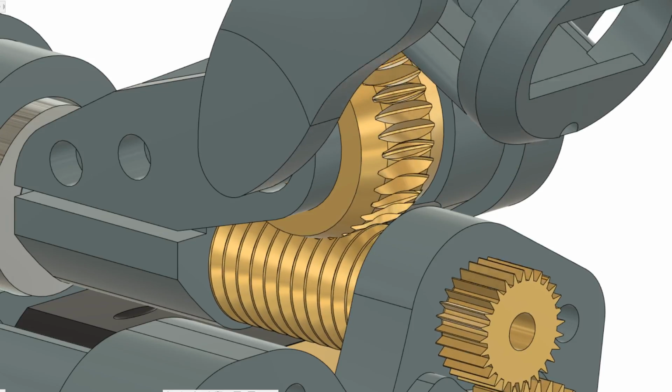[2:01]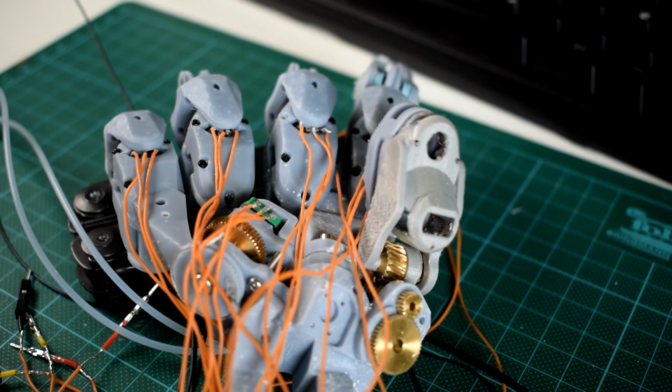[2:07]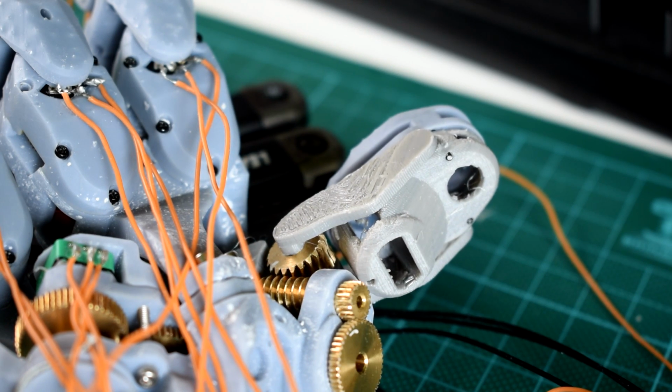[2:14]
The design transmits the rotation using spur gears into a worm drive, which drives a worm wheel to produce the flexion/extension motion of the thumb. I also use a cable mechanism to control the other axis of motion. It would have been pretty cool to use an integrated DC motor with this axis too in the same way, but I don't think I would have had the space in the design.
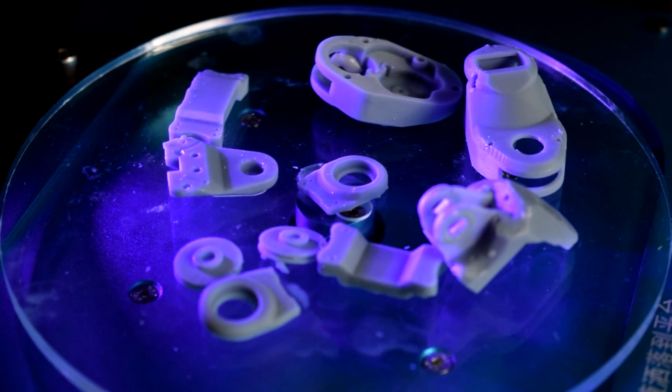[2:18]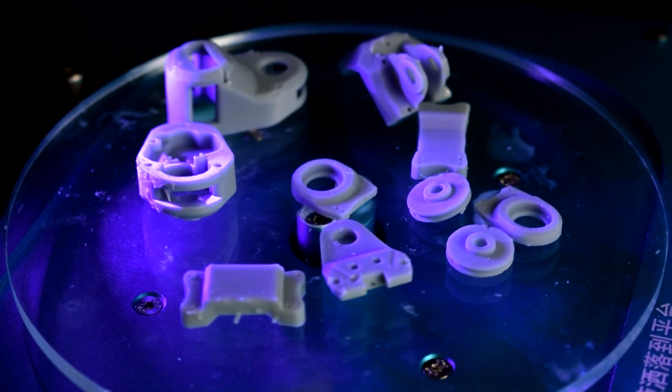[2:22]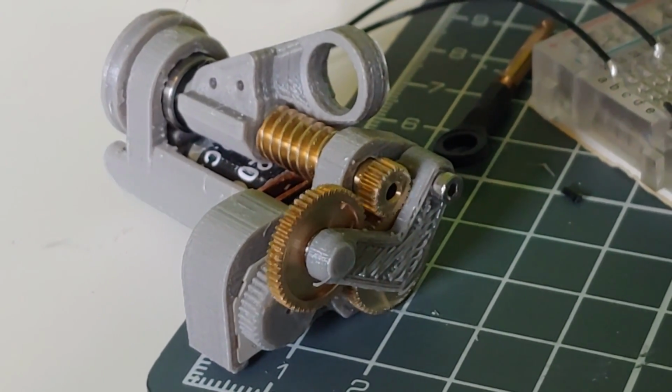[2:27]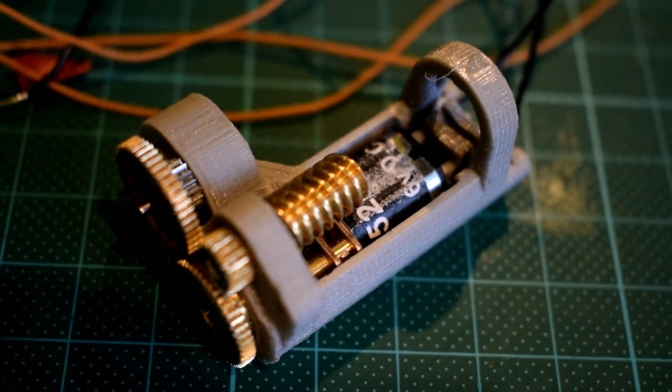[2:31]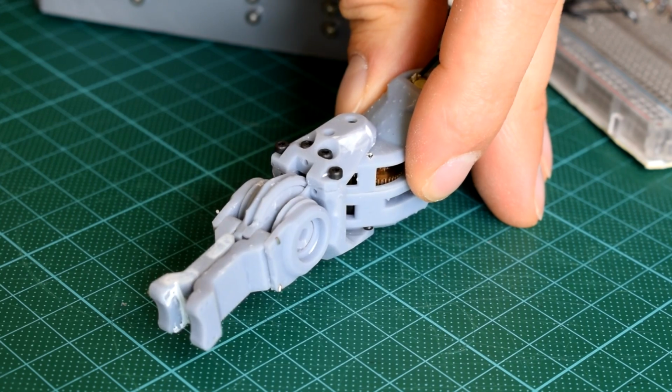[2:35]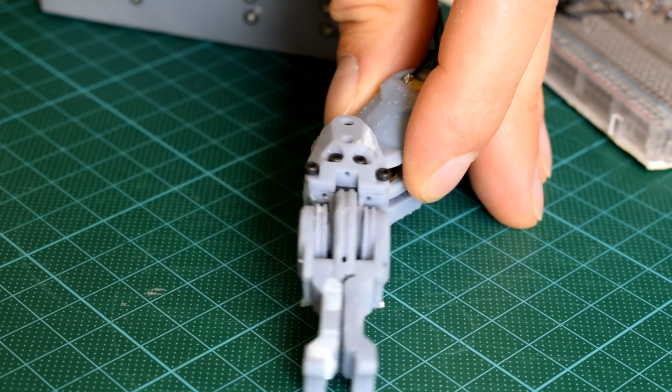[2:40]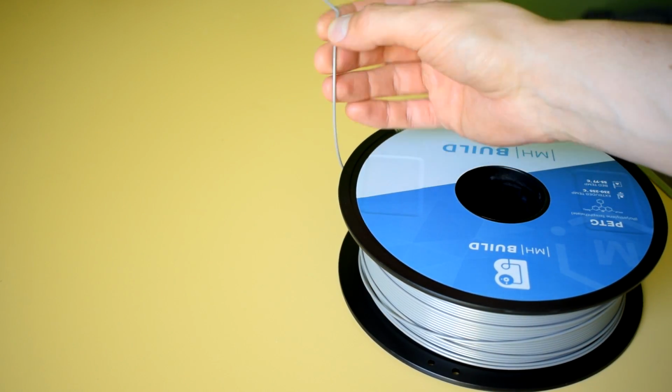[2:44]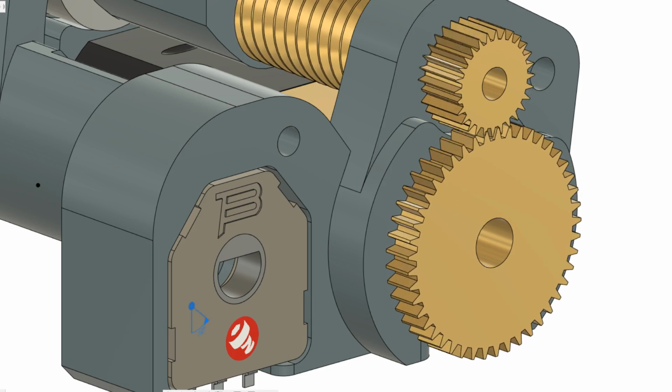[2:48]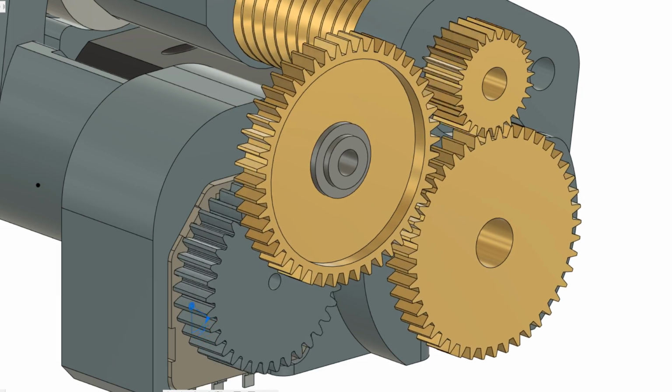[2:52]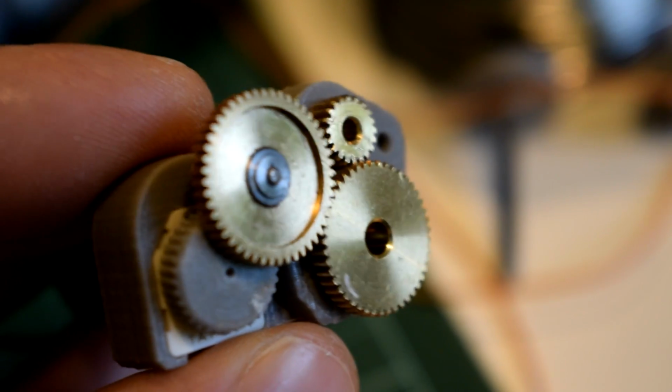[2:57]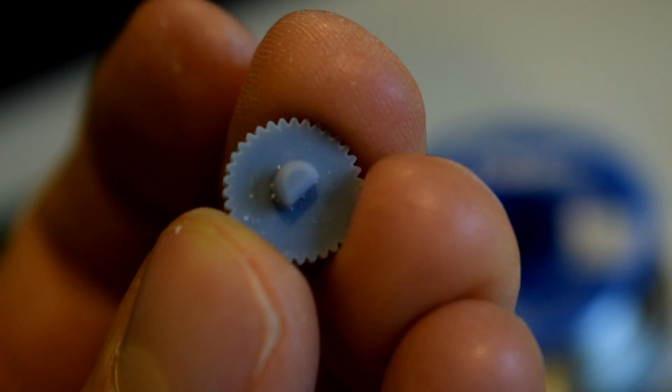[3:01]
Now, in order to take angle readings from the worm and wheel section of the design, I went with a separate gear train which comes off the main one and turns a gear specifically designed to plug into one of my potentiometers. It's fine for this gear to be printed because it doesn't bear a load.
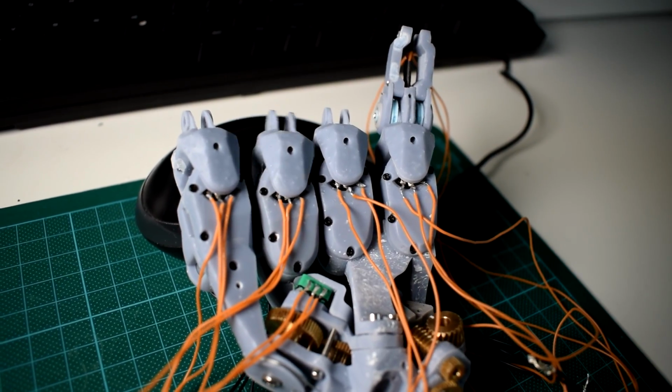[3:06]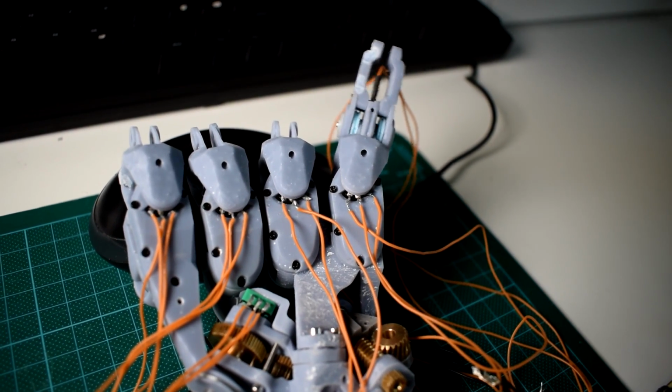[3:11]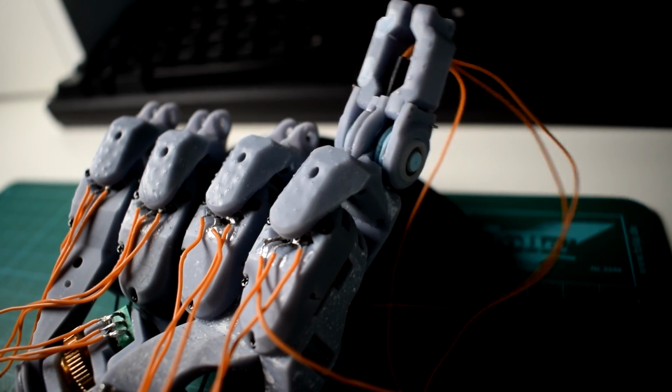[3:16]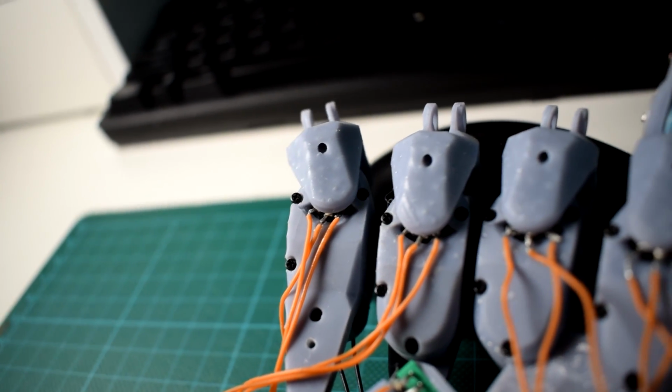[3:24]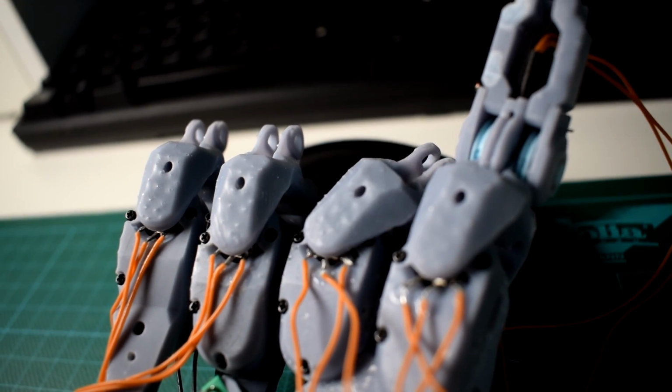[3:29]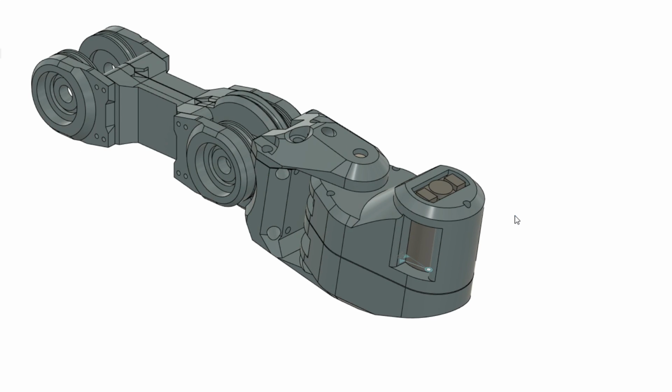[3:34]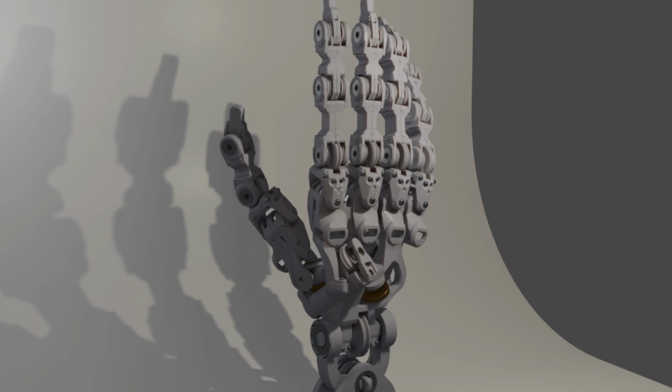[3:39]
I've had a chance to test the 2nd through 5th lateral MCP joints to see how well they can work together. As I mentioned before, they use Corona DS939MG servos, which make it very quiet and smooth compared with the MG90Ss I've been using for other stuff. They seem to be almost reliable, and they seem to have pretty decent torque, so I'd say I'm quite happy with them at this stage. When it comes time to think about wire management, which I intend to have going through some shell components, it's going to need a relatively long length of free PTFE tubing to allow it enough flexibility, so the design of the shell may need to look something like this.
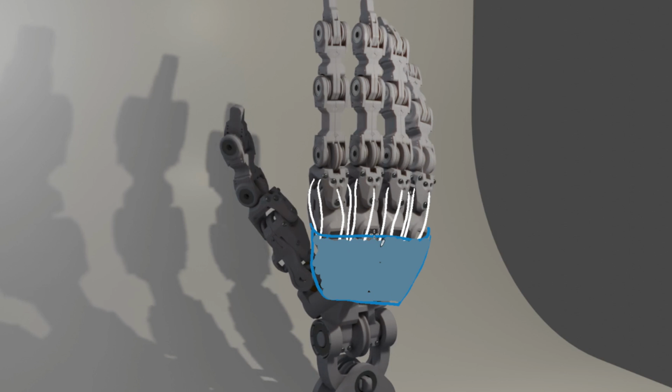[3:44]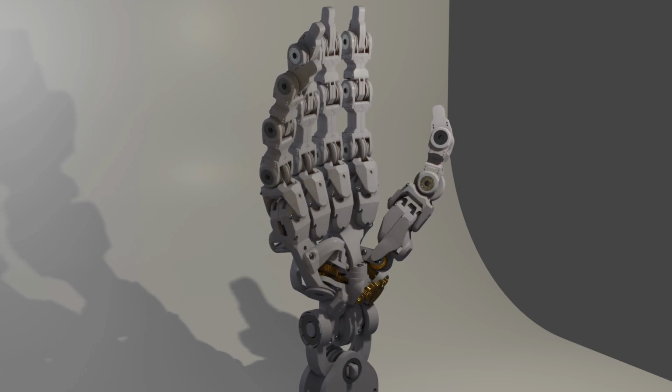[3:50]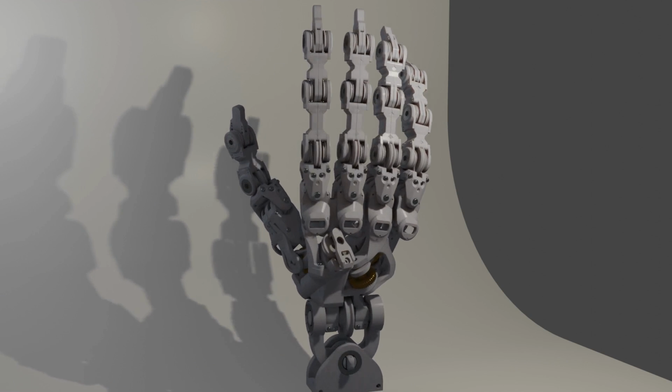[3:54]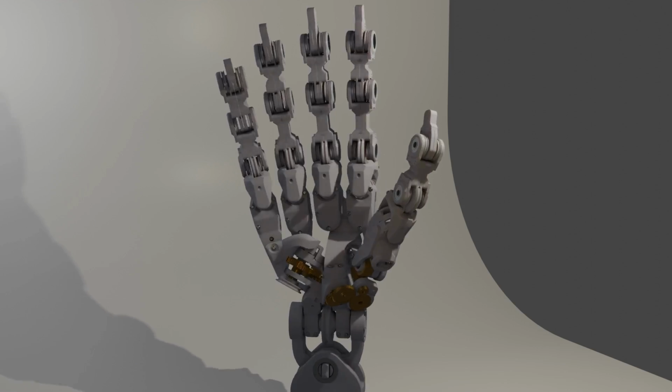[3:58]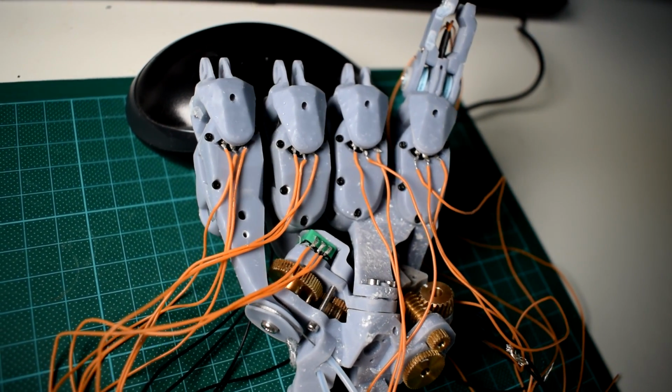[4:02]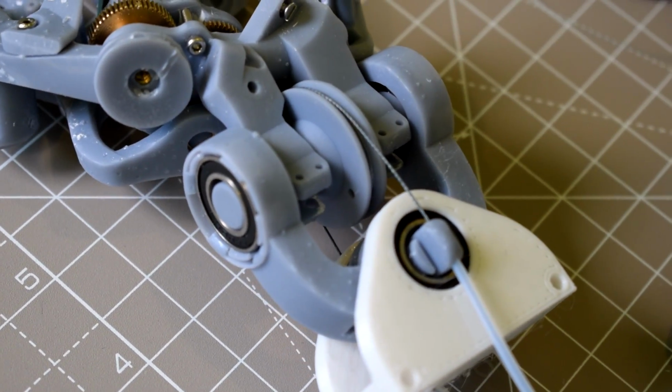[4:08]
So now I'm going to talk about the hand overall, and hopefully I can make it very clear what needs to be done moving forwards. In general, all the subsystems are working reasonably well, and the next step should be to build a prototype of this mechanical frame, correcting the issues where possible. When a robust mechanical frame has been made, it'll then be possible to start experimenting with the control and programming. So let's go over all the subsystems and what needs to change.
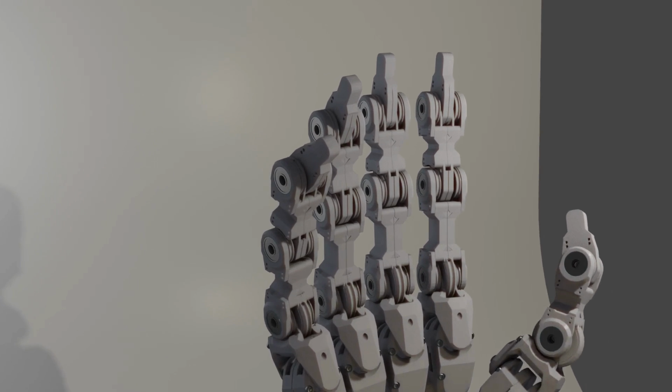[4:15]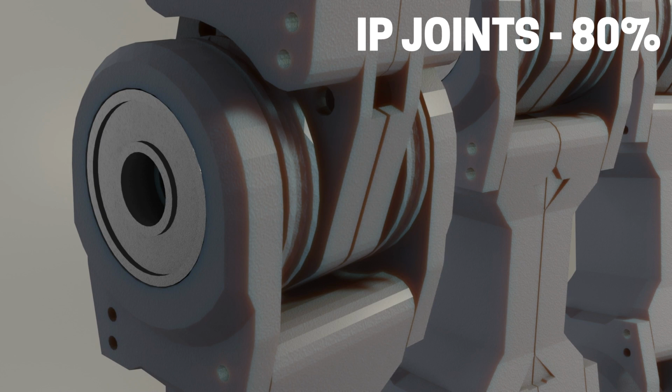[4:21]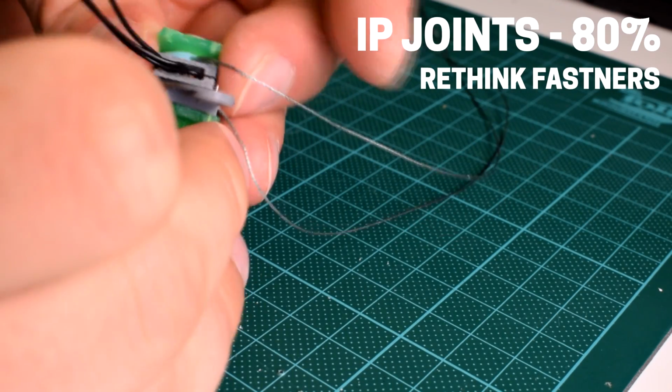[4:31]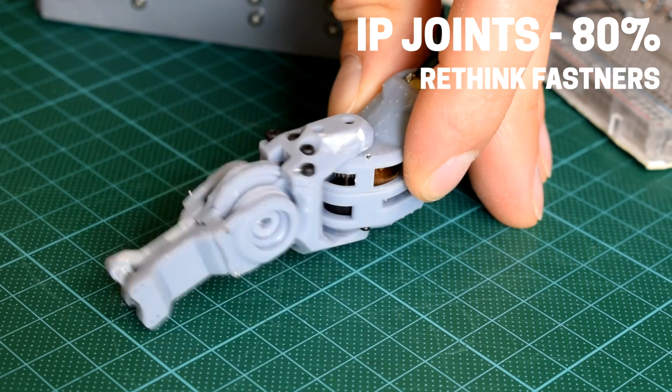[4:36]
I'm going to give them a rating as a percentage which represents roughly how ready for a final prototype the parts are. So the IP joints first of all. I'm giving them an 80% for how they were working in PLA, but I haven't tested them extensively in SLA. In order to improve the design, first off, I might prefer a more robust fixing method where I've used wire to hold them together, but it still remains a very cheap and easy option.
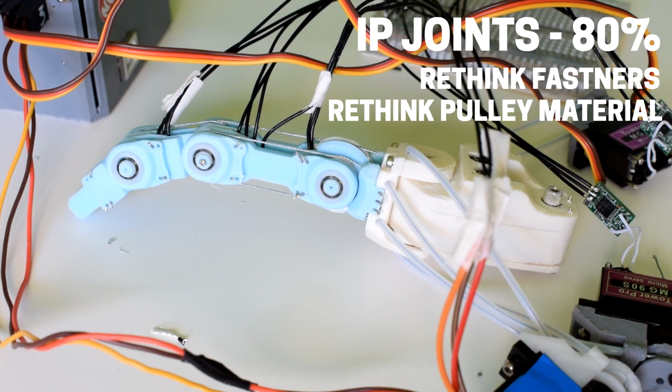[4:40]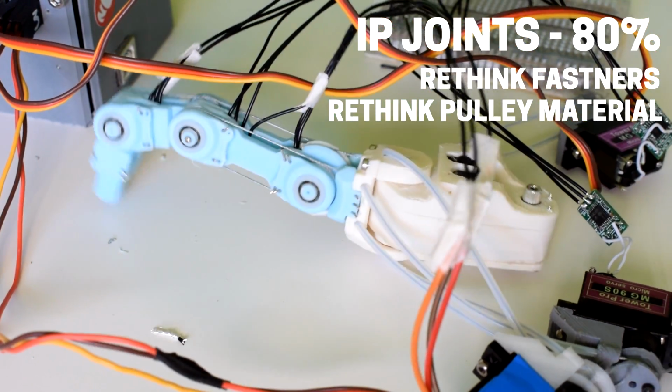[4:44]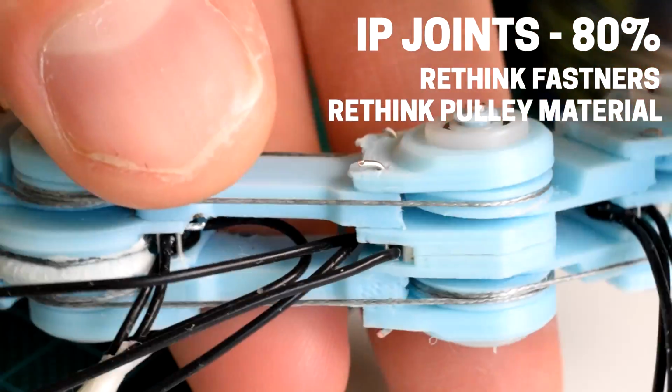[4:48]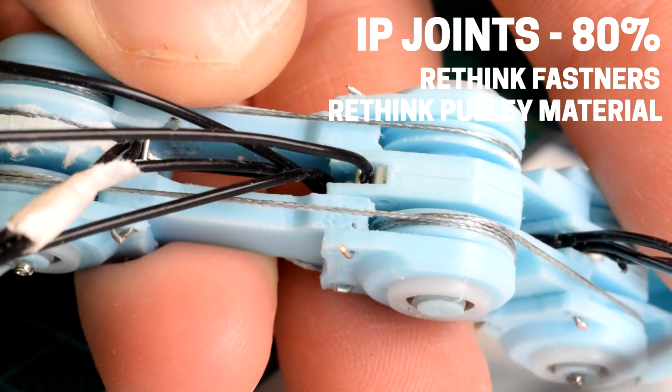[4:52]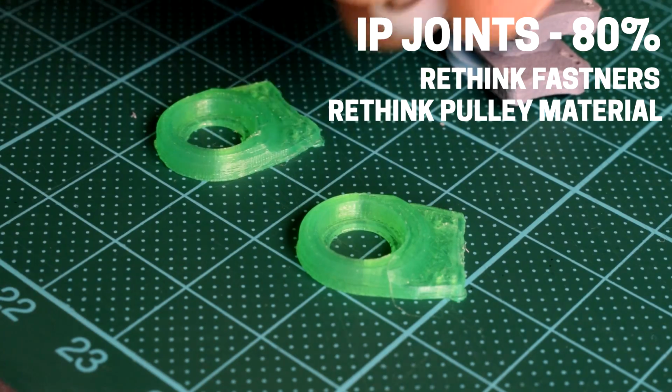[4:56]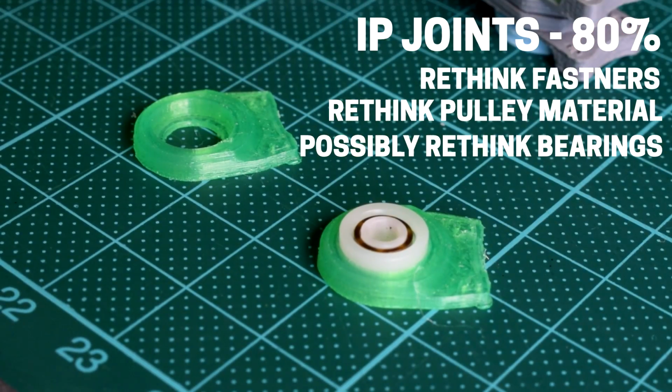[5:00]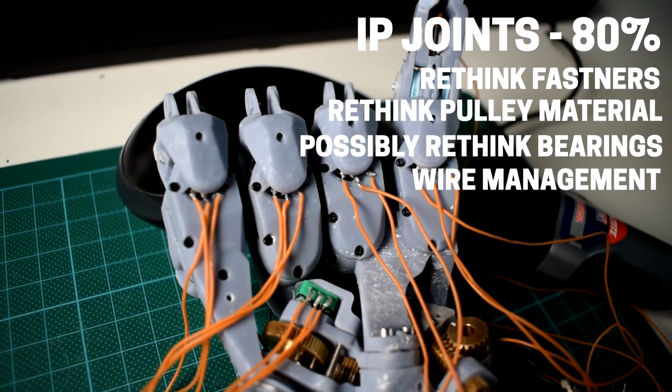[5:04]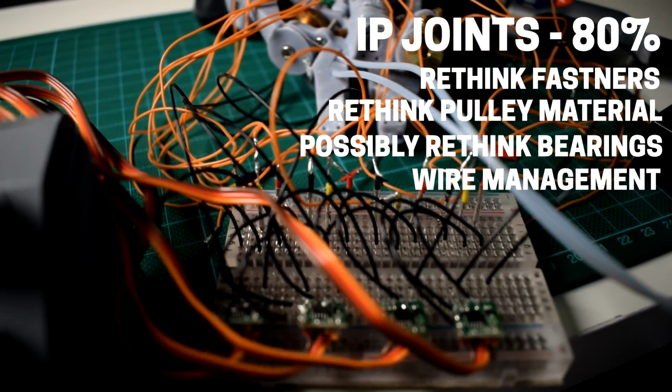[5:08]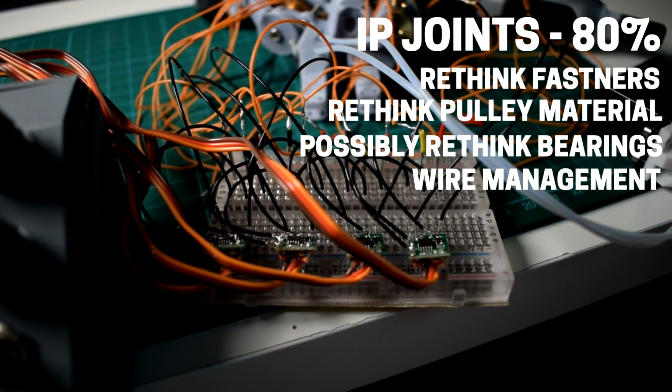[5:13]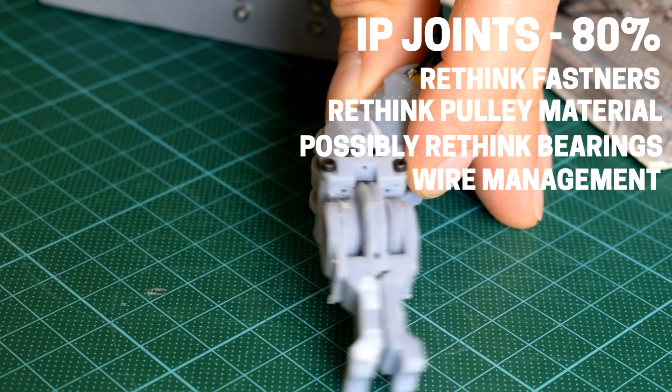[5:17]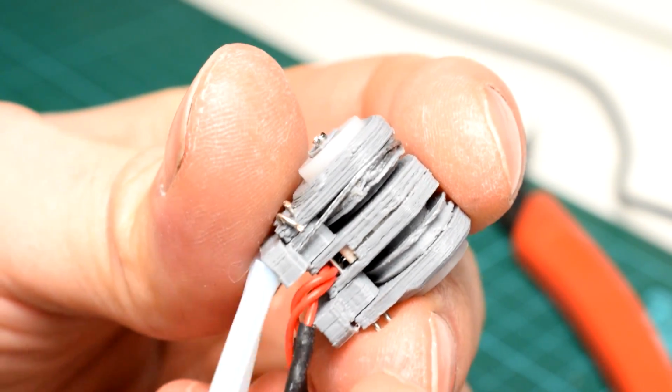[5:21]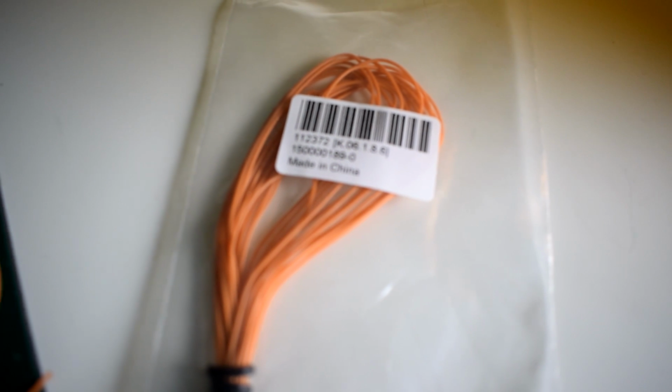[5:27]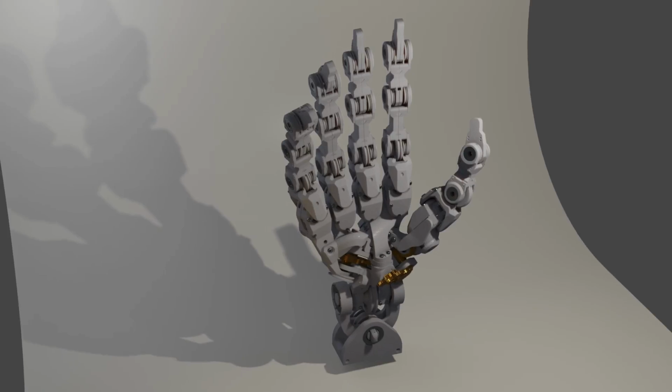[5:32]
And finally, obviously, wire management is a big issue at the minute, but as I've mentioned, I want this to be part of the shell components. Also note that some of the linkage pieces I've experimented with in the fingers don't leave enough space for the cables to exit through, but it does depend on the size of the cables that you're using. In my most recent prototype, I used some Turnigy 30 AWG silicone wire from Hobby King on the recommendation of someone in the comments, so thanks very much for that. It seems to work really well.
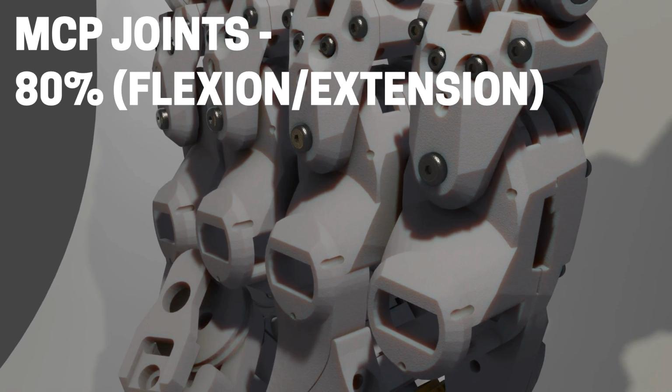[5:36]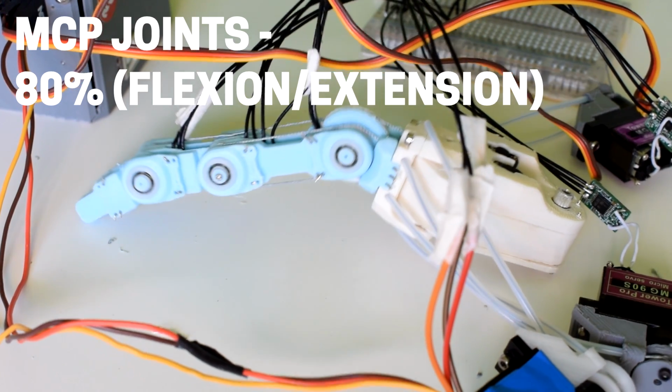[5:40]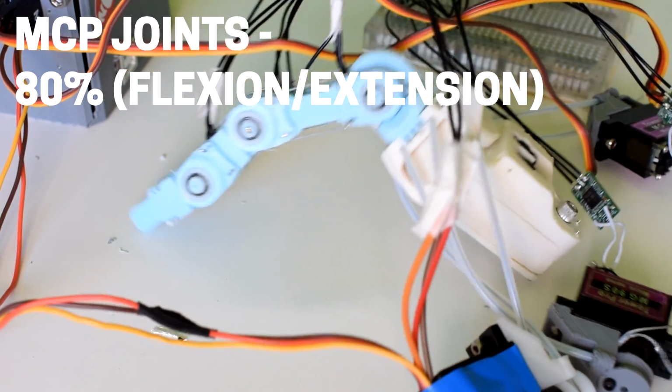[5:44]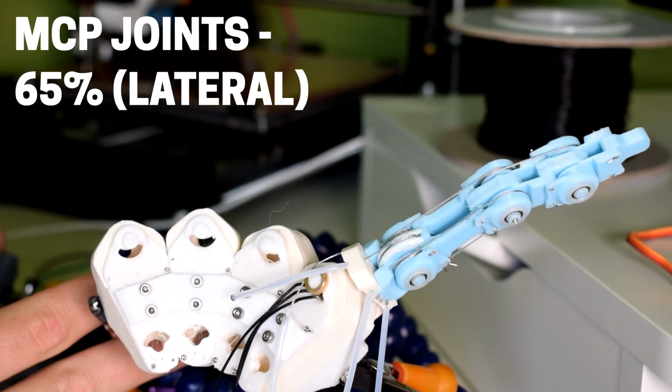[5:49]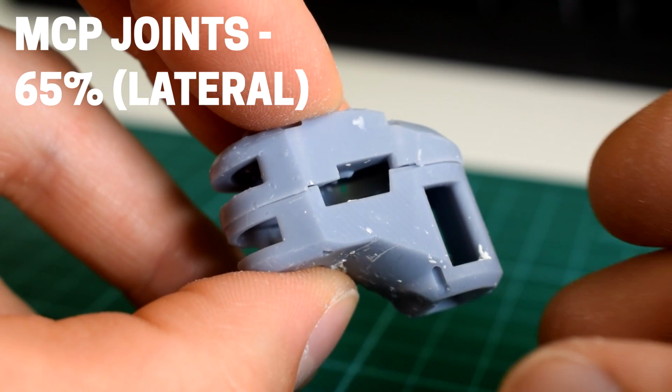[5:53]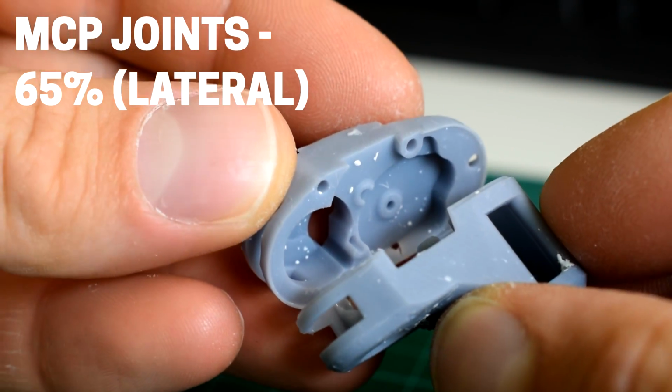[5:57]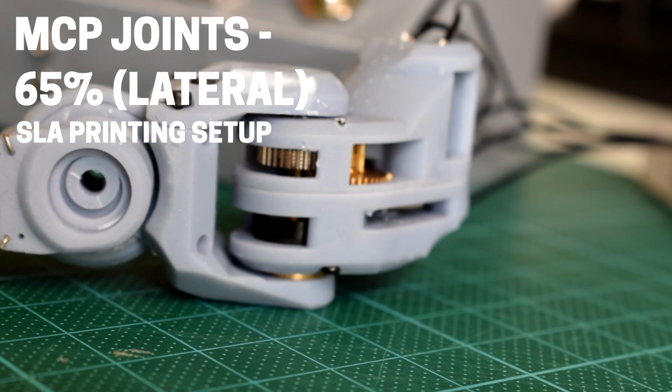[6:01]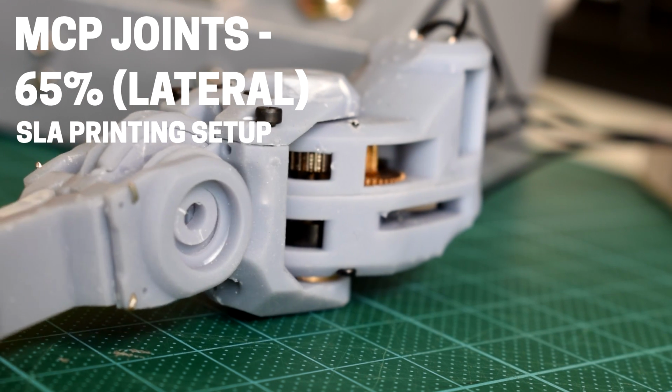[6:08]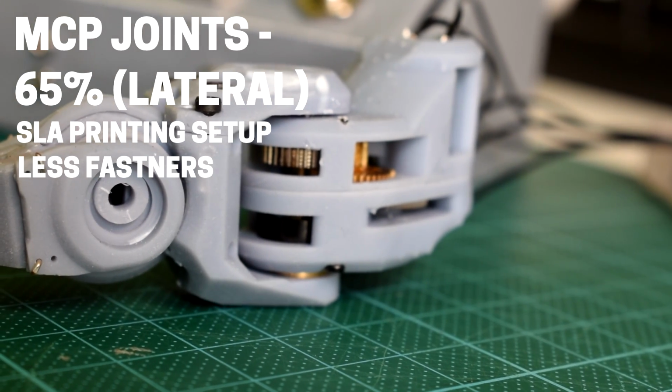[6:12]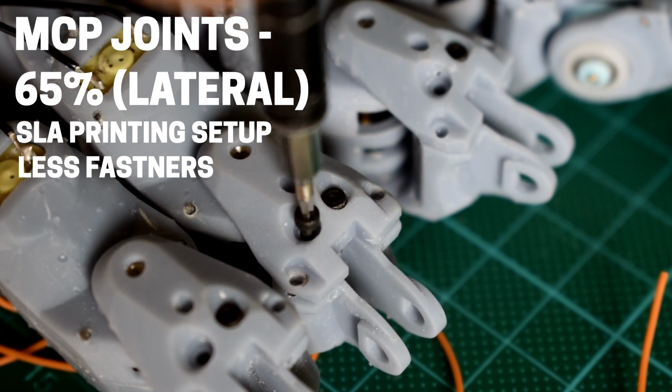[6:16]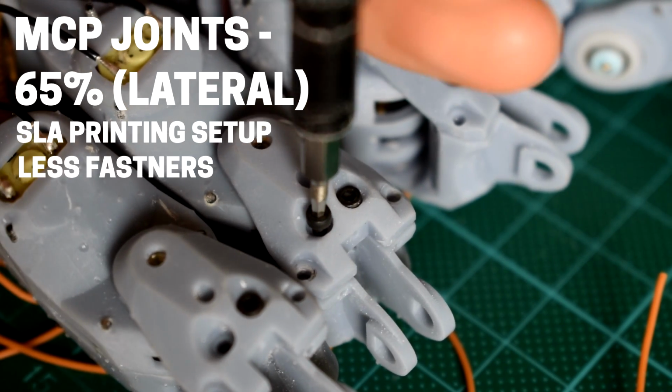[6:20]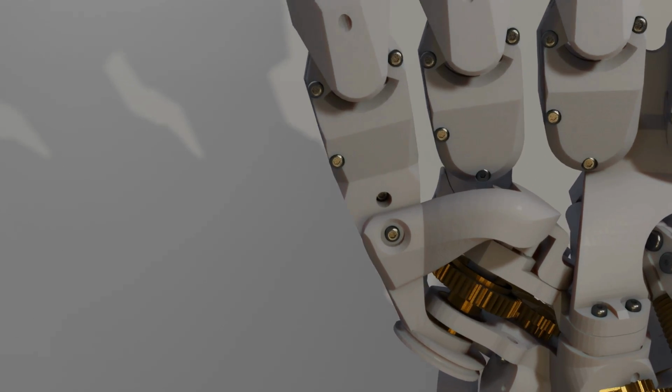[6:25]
Now, moving on to the MCP joints, I would say they're about 80% working in flexion/extension, because the flexion and extension movement is essentially the same as the IP joints, so the same issues apply. As for the lateral motion, I'm giving it a 60%, maybe 70%. It's because the very small scale of the components in the servo mean that the construction can be quite unreliable. It's partly to do with the 3D printing setup on the SLA printer, but it's also due to things like the height of the motor pinion and difficulty holding the rods in place. I would prefer a better way to join the two halves of the MCP adapter that doesn't involve so many screws, and again, wire management is always going to be an issue until we have the shell sorted out.
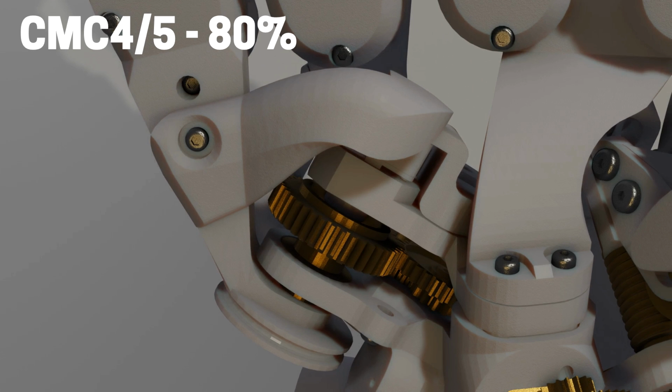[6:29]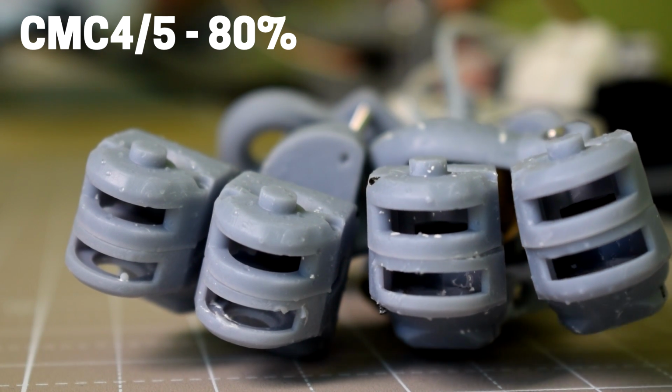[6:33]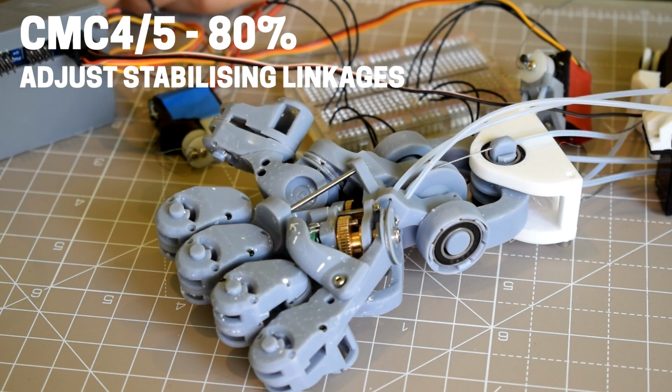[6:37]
As for the 4th and 5th CMC joints, which is the flexion of the palm, I would say it's about 80% working. The gear train appears to work fine. I'm just a little bit unhappy about some of the stabilizing linkages. They just need to be a little bit more secure, so they might need some minor adjustments.
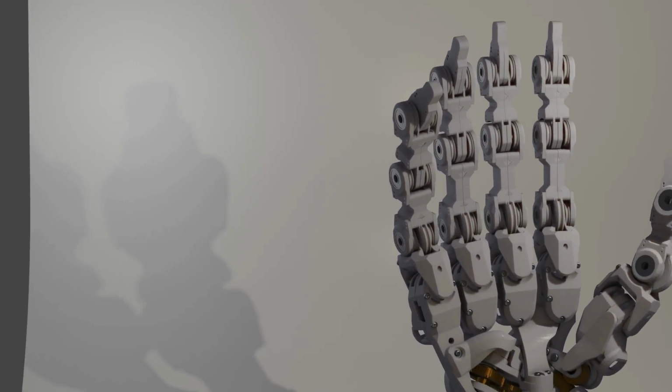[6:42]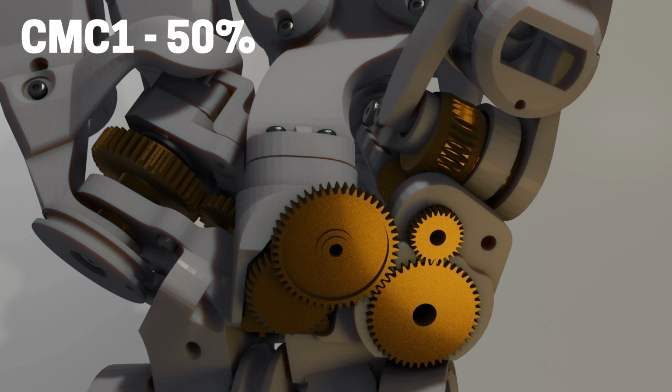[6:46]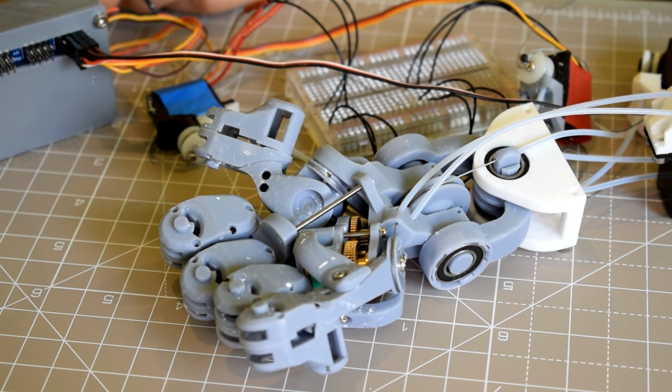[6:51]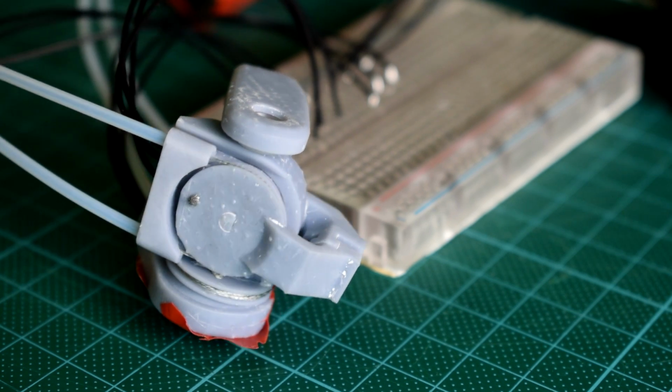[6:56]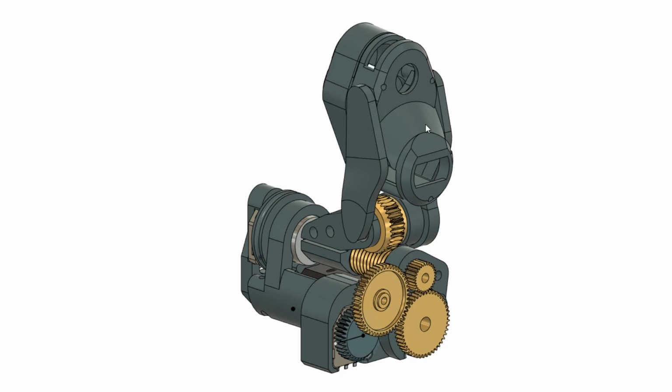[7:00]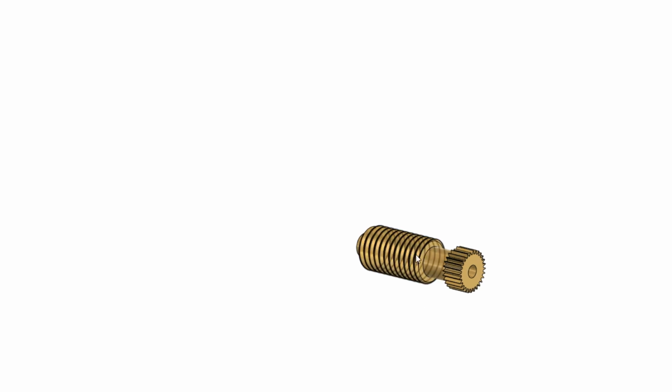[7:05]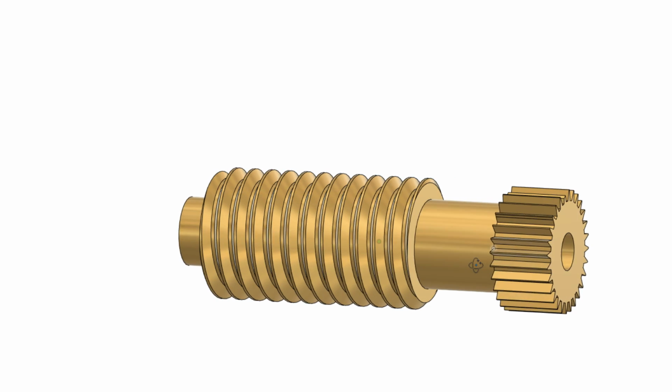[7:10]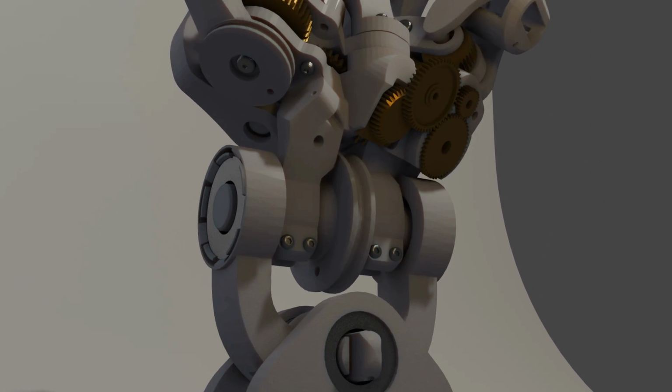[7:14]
Looking now at the 1st CMC joint, which is the CMC of the thumb, I'm going to say it's 50% working because I'm 50-50 on which mechanism design to choose. I have two possibilities and I've shown them both to work. The pure cable mechanism is a big pain due to the exit wires moving about, and the worm wheel works well, but there's a big issue with the joining of the worm drive to one of the spur gears, which will become worse under loads. And the worm drive option is also a big pain for people who don't have easy access to all of the right parts. And then looking at the wrist, I would say that's 90% working.
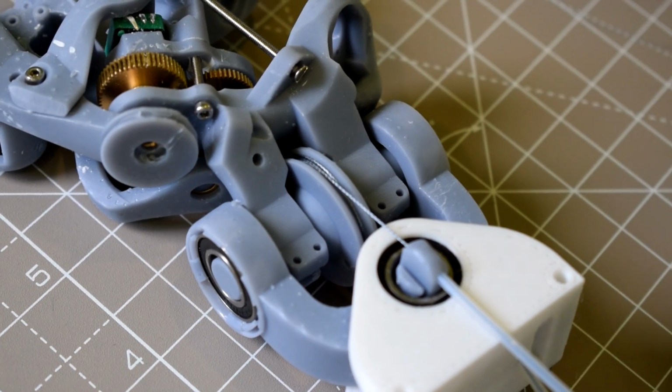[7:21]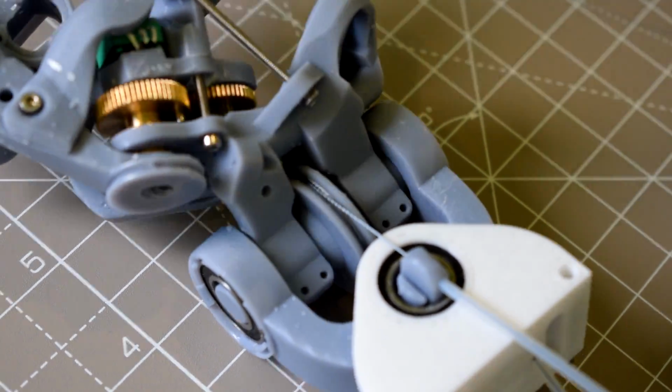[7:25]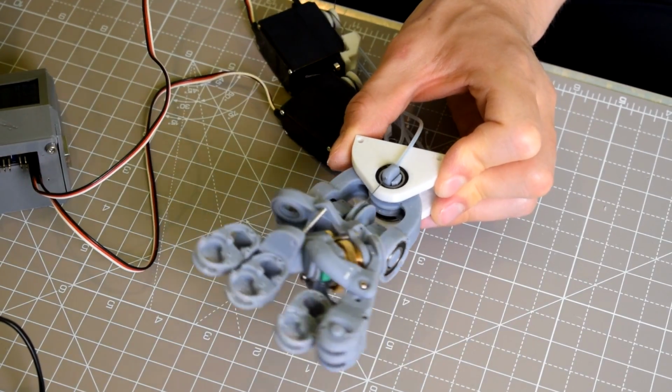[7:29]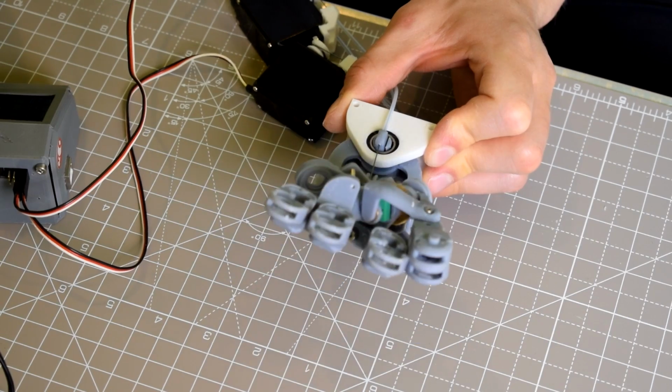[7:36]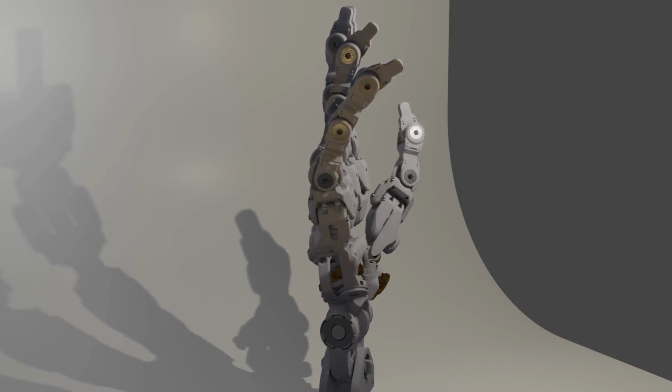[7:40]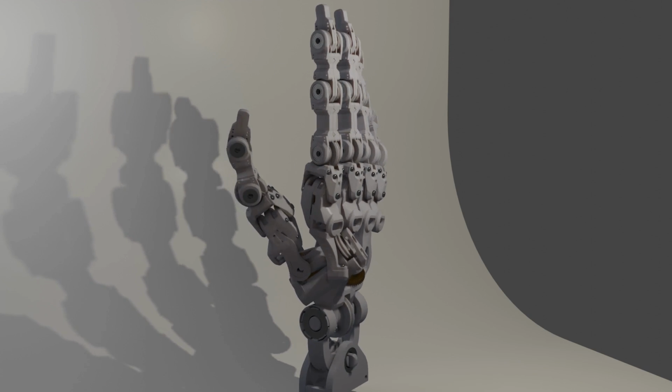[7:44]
There's pretty much no issues with it, as it is really simple. It just needs a way to attach to a theoretical forearm, which will contain all the actuators. And I might prefer it if it could be made slightly smaller, but as mentioned previously, I might prefer to use a totally different wrist mechanism eventually anyway. So as I mentioned, it is going to be very difficult for me to get around to building this prototype for the time being. So check the description where you'll find everything on my GitHub page, and feel free to do whatever you like with the files as long as I'm attributed in some way.
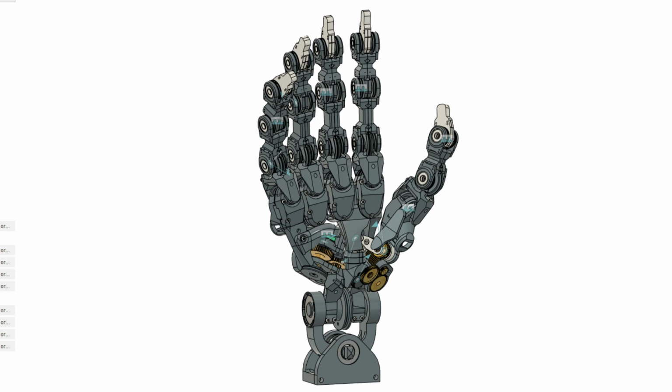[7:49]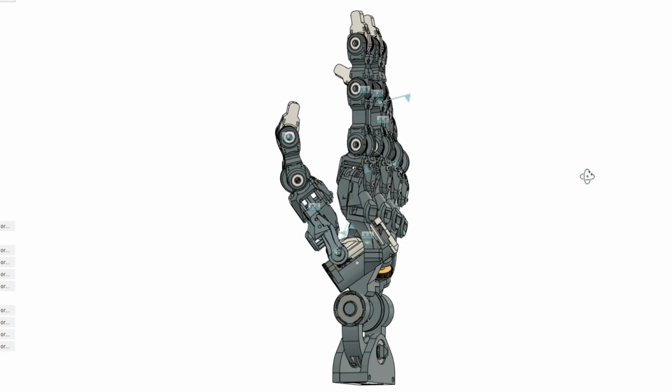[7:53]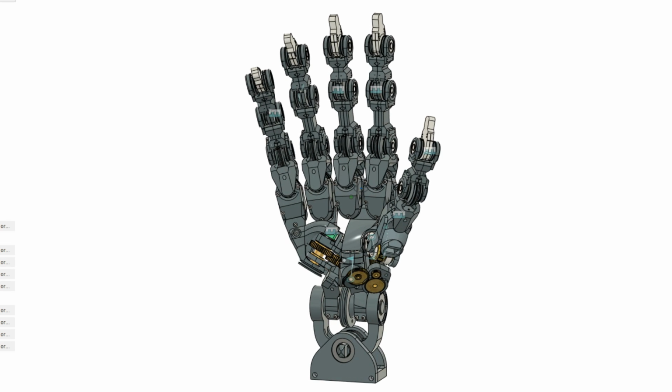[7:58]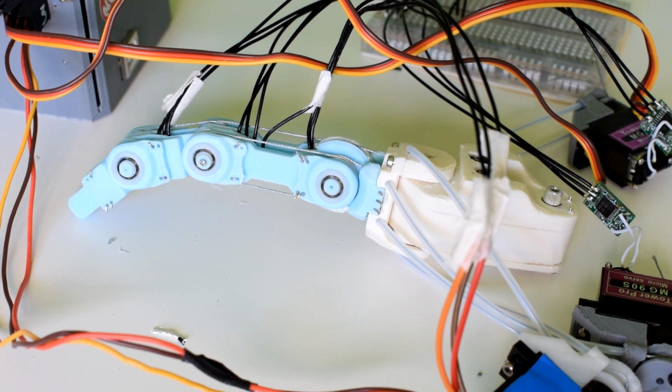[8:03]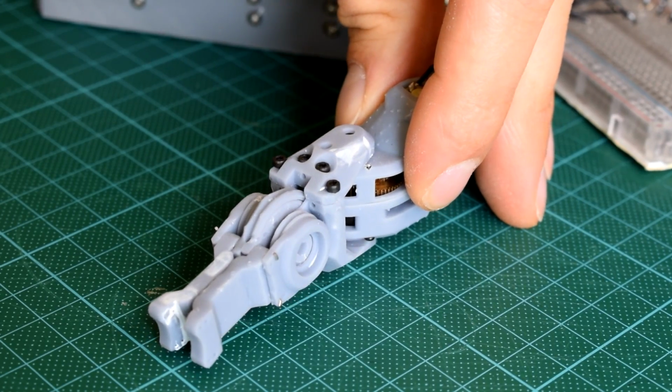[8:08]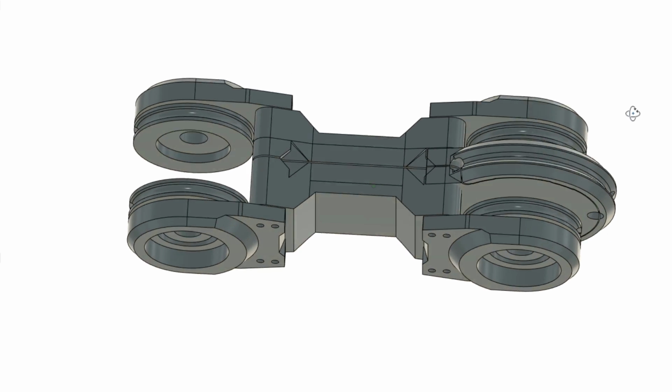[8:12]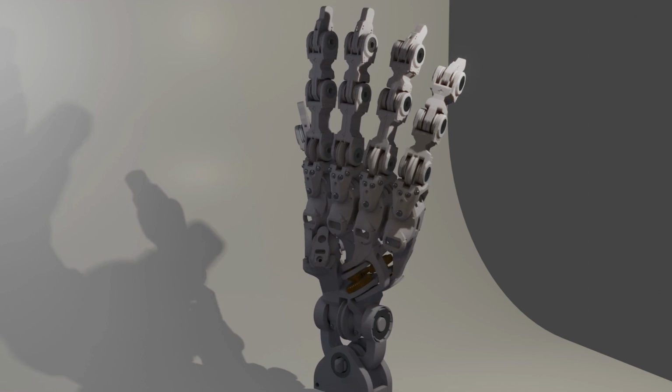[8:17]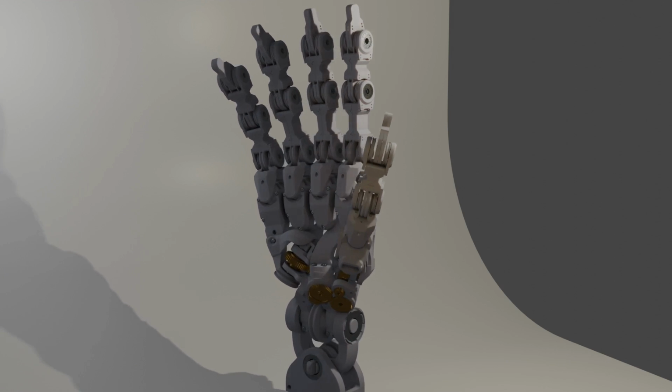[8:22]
Just a quick note on the files on the GitHub page. There is a big assembly which looks like it has everything in there, but be careful because the IP joints in this design are actually just placeholders. So I don't have a definitive version of the IP joints because I've experimented with a lot of slight variations, so look at the actual IP joint assembly file. Other than that, pretty much everything else is contained within the overall assembly file, but please look through all of the files and make sure you really understand it all and are confident with it before you go out and spend a load of money on printing resin and parts.
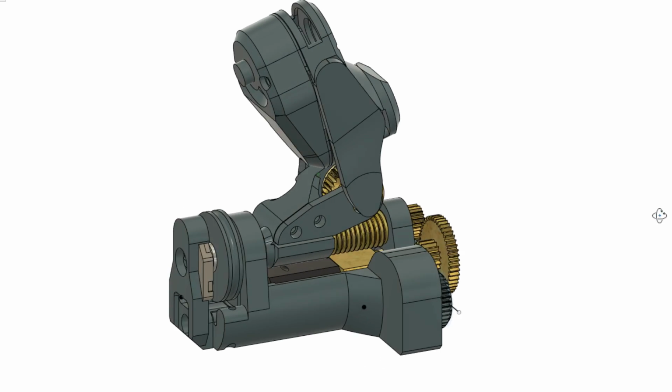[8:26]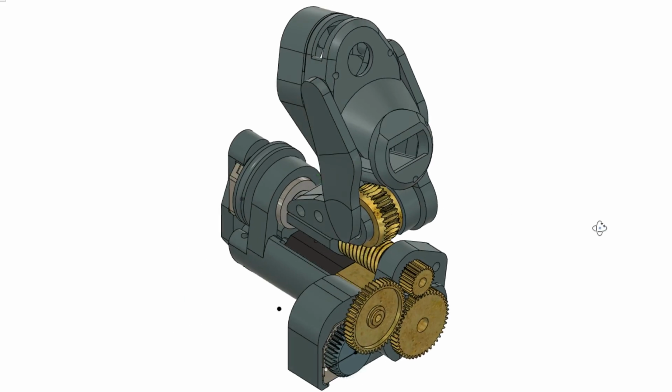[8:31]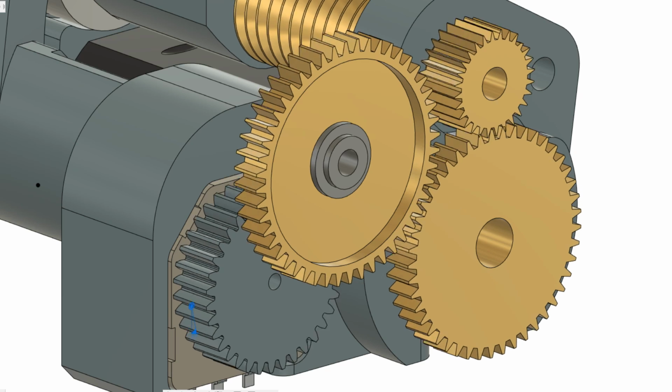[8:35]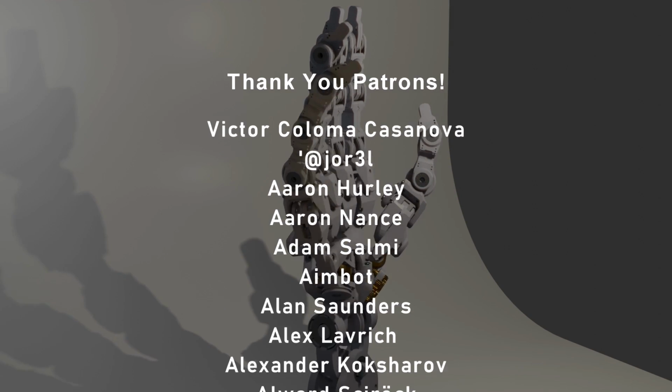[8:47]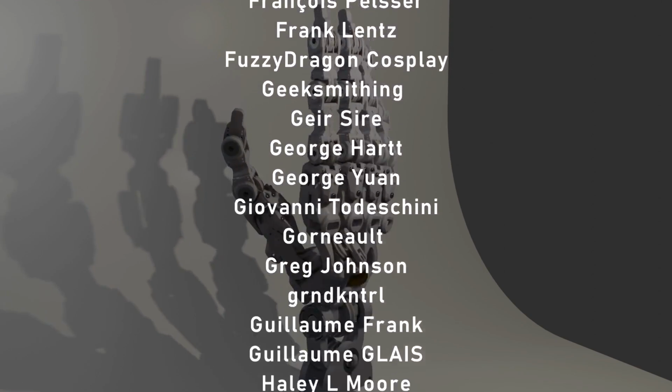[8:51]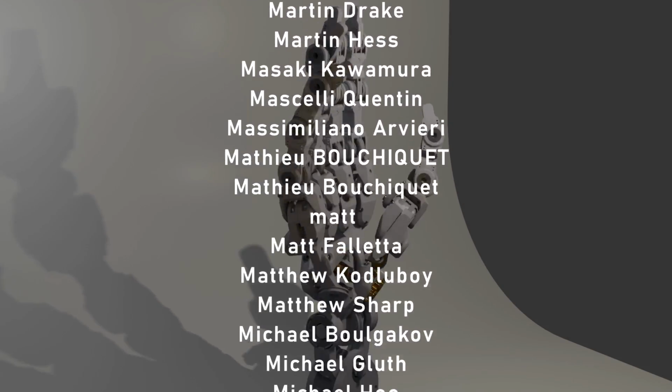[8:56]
If you've been wanting to have a go at this project and you've been waiting for me to finish the designs, I would say that now is the time for you to download the files and have a look around and see if you might like to have a crack at it. Because as I mentioned, the upload schedule is going to get a lot less consistent and a lot less predictable. So best of luck to anyone who decides to have a look at the files and have a little experiment. The next step needs to be, as I mentioned, to get a full prototype working of the hand and use it to develop a control glove, and then redesign the hand to work with the shell components and whatnot.
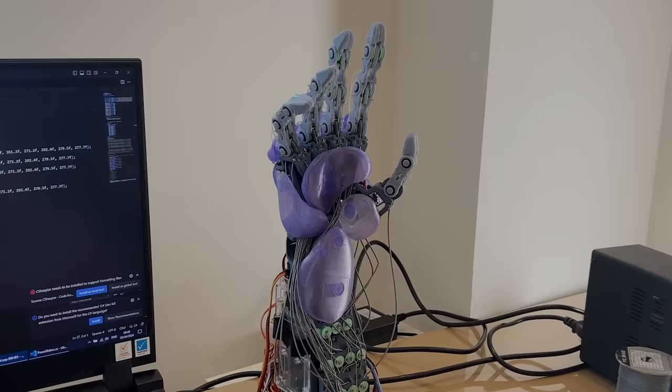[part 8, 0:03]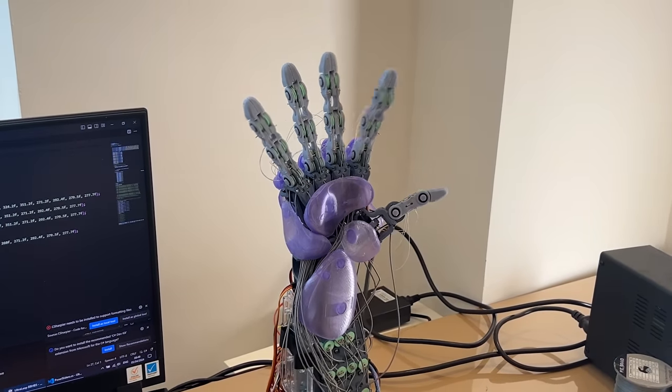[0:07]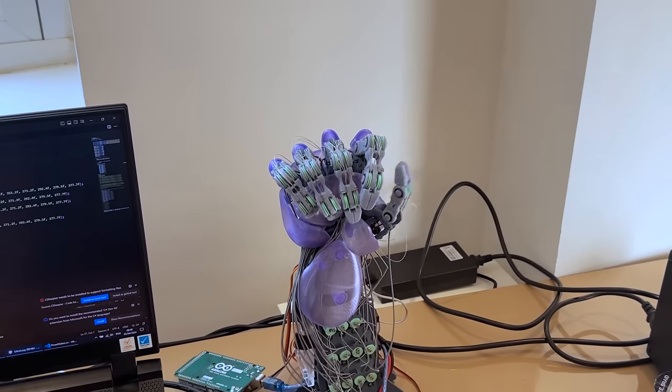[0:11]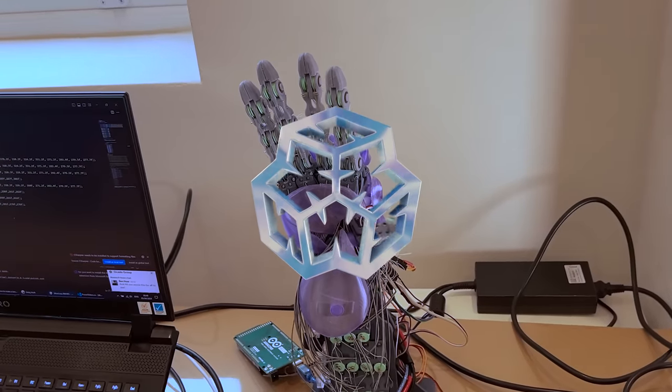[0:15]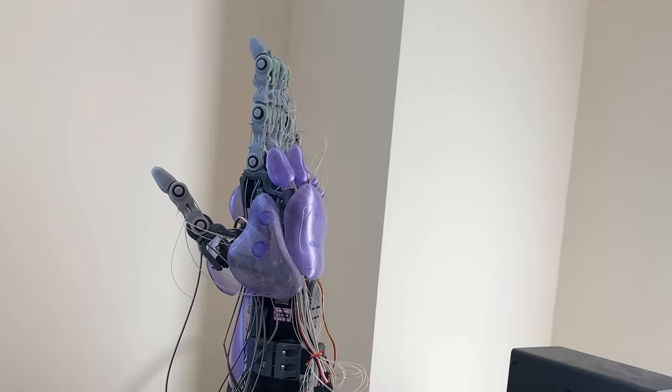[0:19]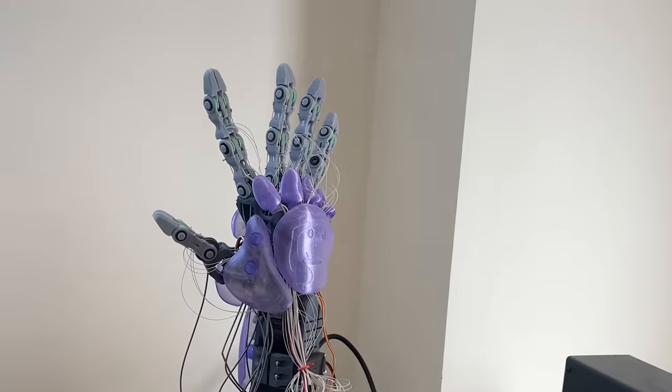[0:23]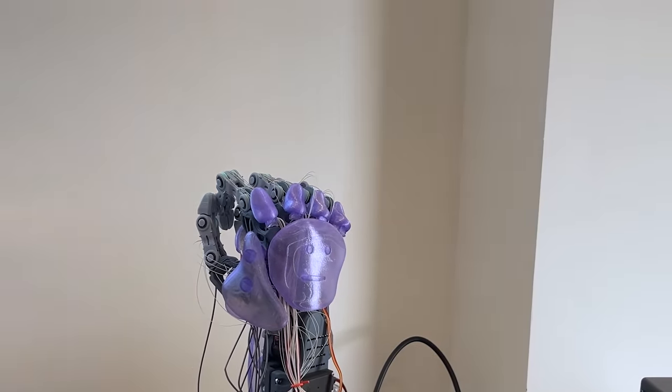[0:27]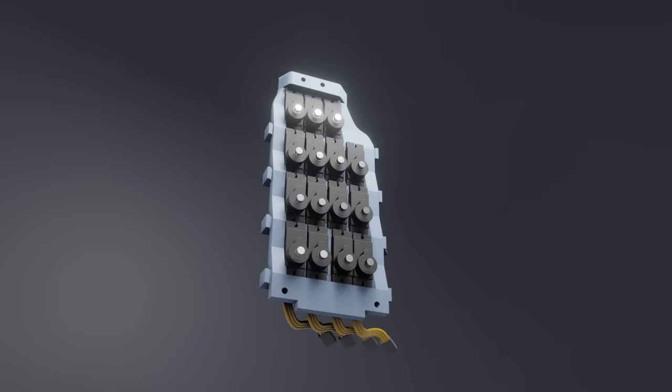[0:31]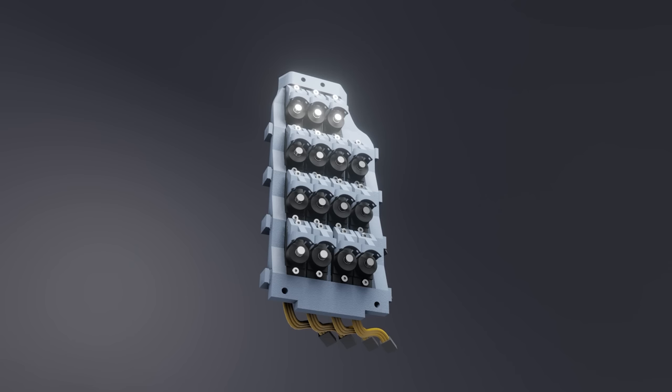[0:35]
Welcome, Cogs. In this video, I'll be laying out everything you need to print, assemble, wire and control your very own Nilheim Mechatronics Bionic Hand Delta 1.1. If you don't want to build your own, I've put a lot of work into these hypnotic Blender assembly animations, so hopefully that'll be entertaining whether you intend to build your own or not.
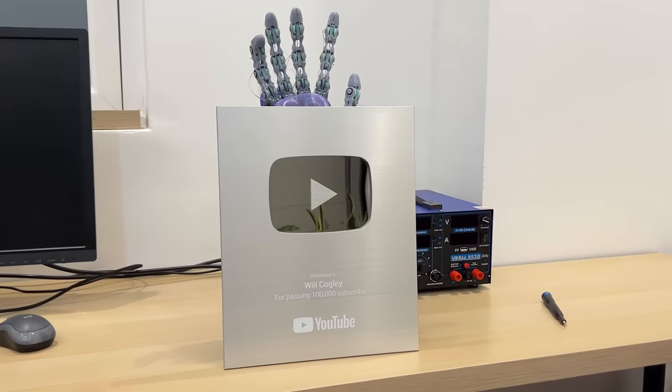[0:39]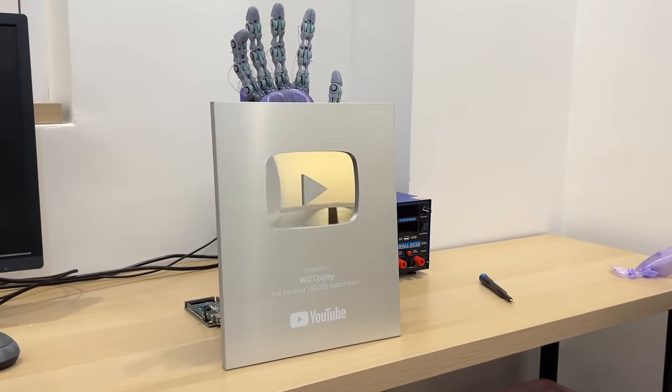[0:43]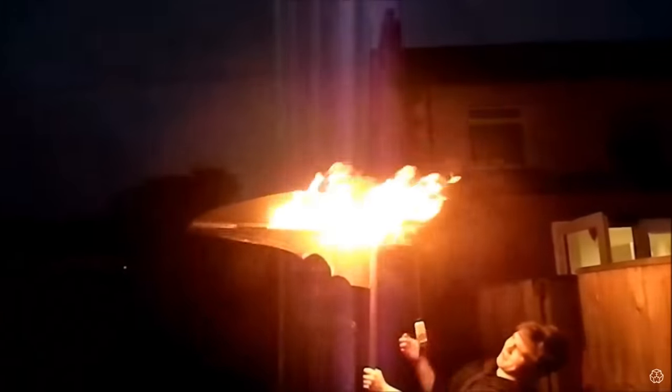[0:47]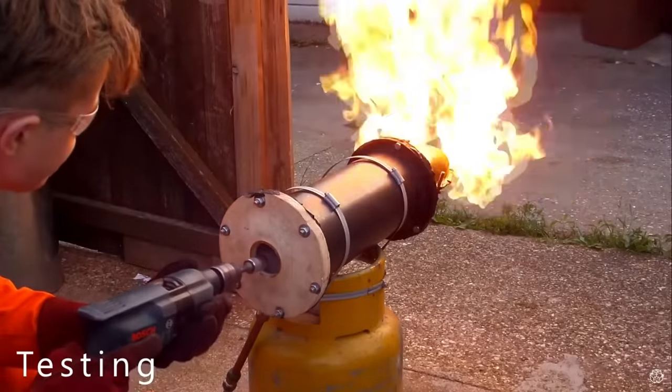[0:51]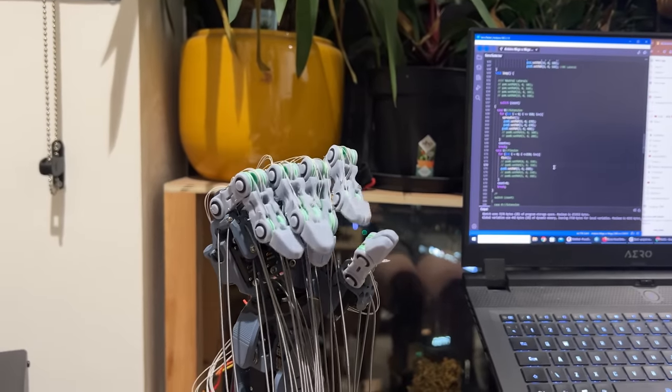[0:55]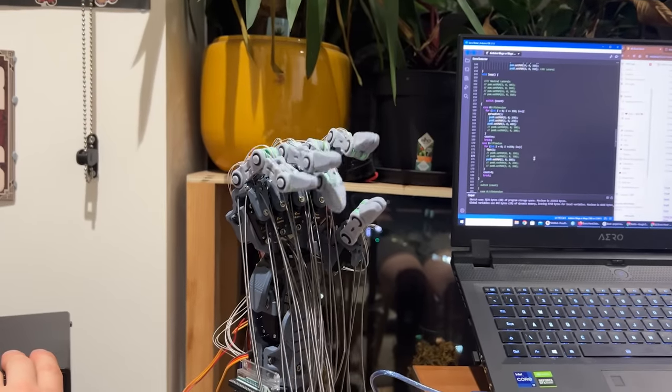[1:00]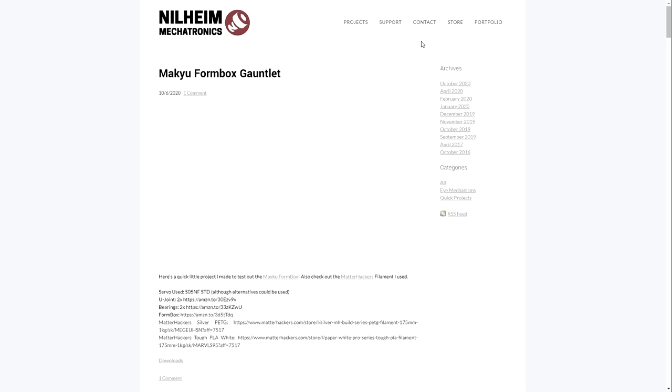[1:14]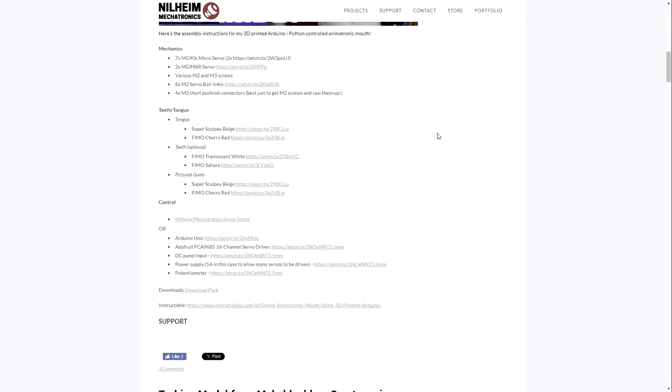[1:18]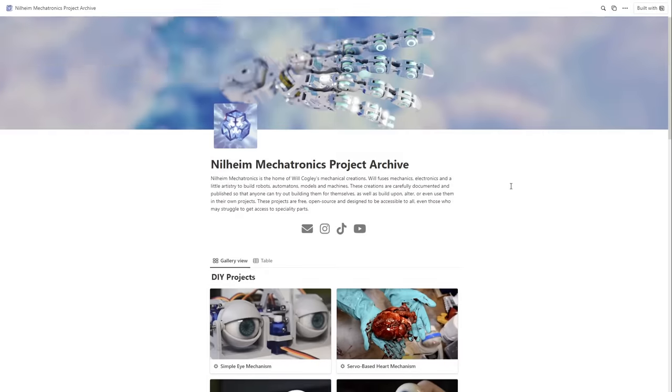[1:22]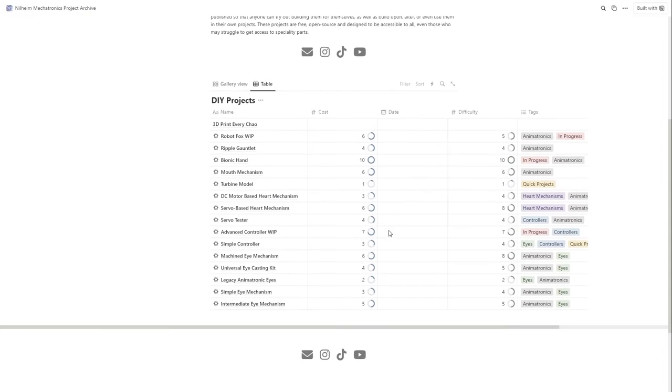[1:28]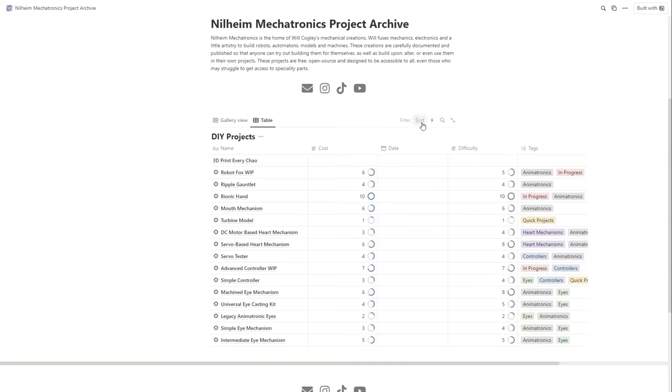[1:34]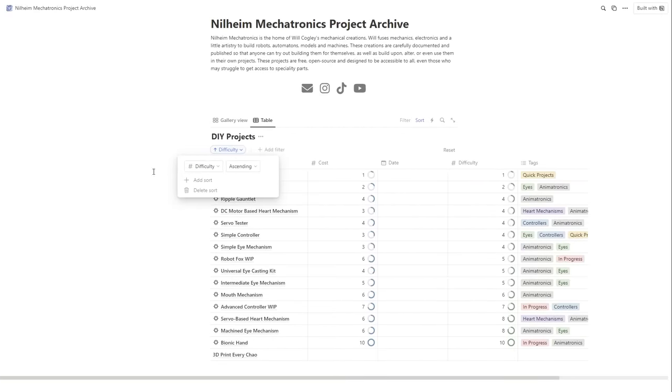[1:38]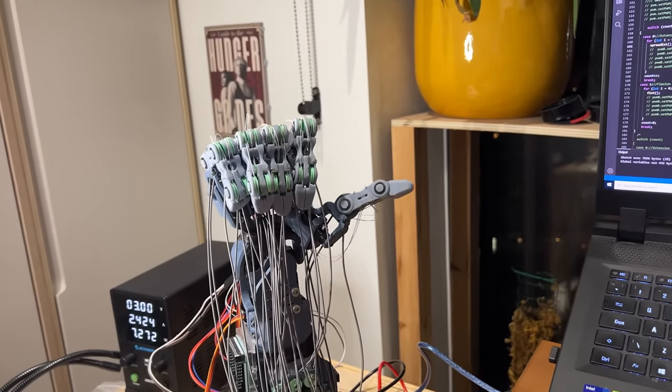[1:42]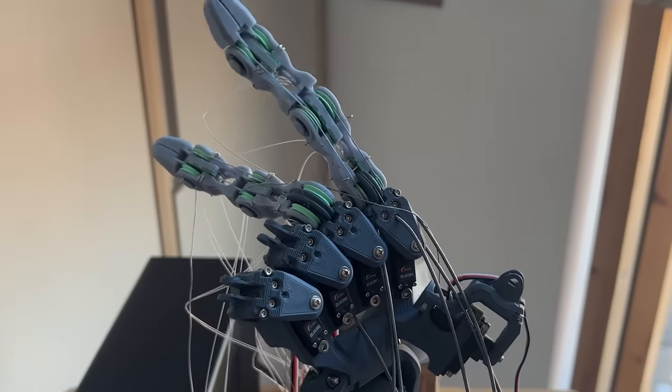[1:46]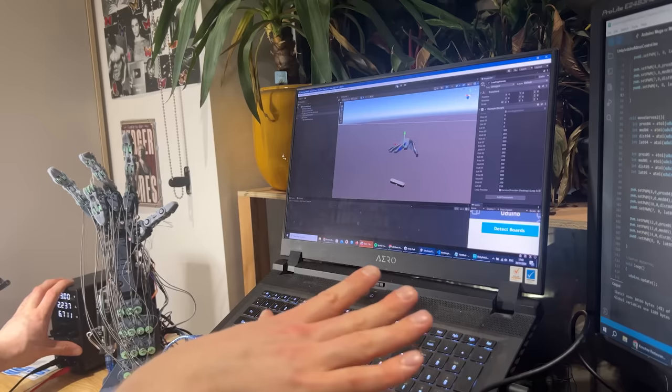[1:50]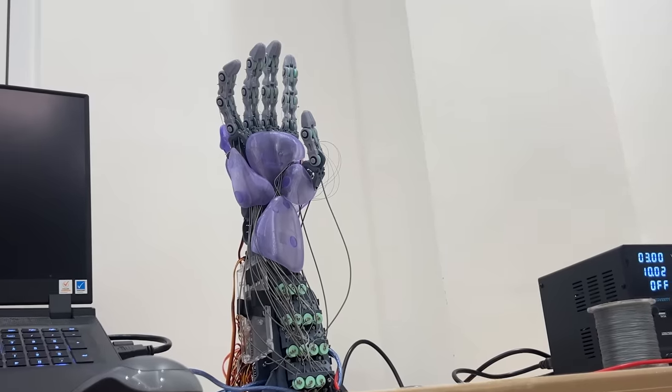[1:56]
So there's a few things about this project I want to make clear before I get started. First of all, this project is not complete. In truth, I don't think it's really possible to complete a project of this scale and undefined scope, but I decided that now is the best point in this project's life to open it up to the wider world so that it can properly flourish. There will be mistakes and bits that could be improved.
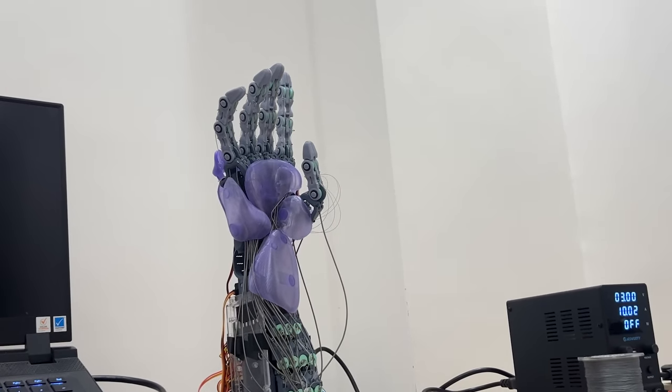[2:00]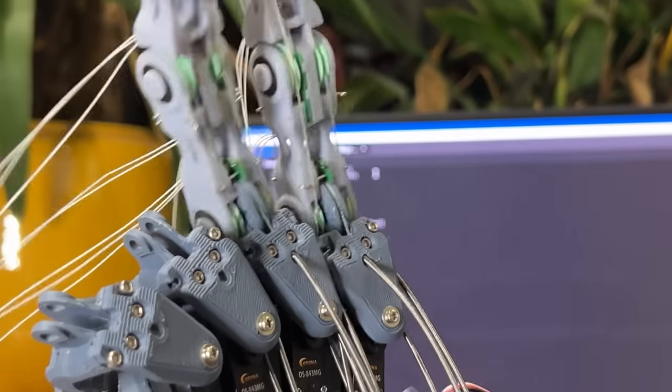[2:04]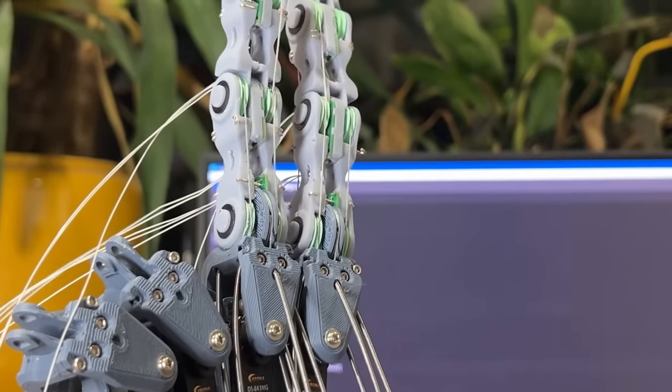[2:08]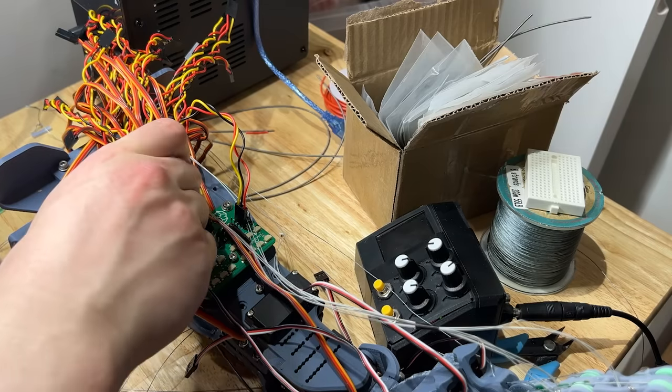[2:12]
Secondly, this project is difficult. I've crammed a lot into some really tight spaces, I have mechanisms on top of mechanisms, and all of this is buried under a rat's nest of cables. Be sure you know what you're getting yourself into before you embark on this project.
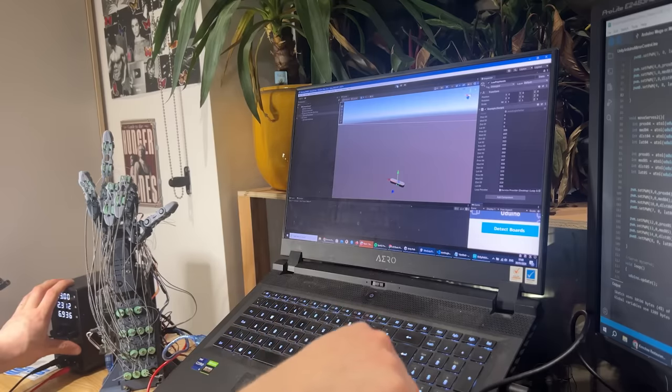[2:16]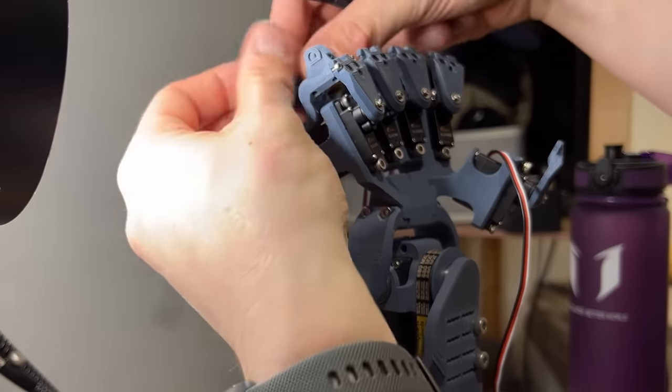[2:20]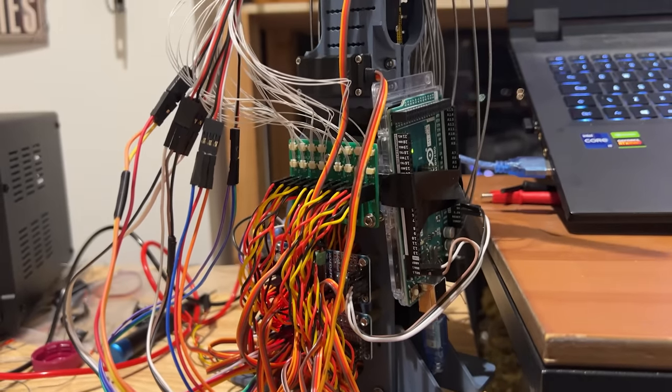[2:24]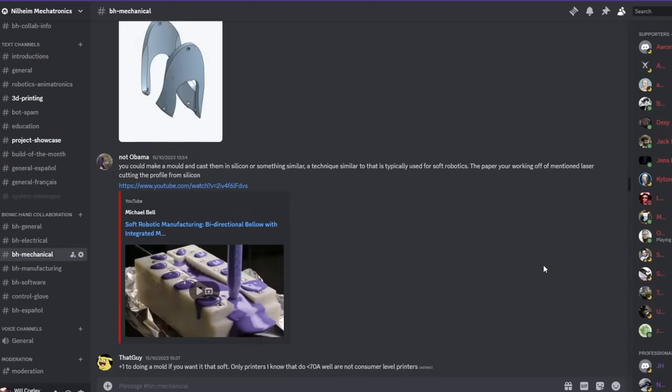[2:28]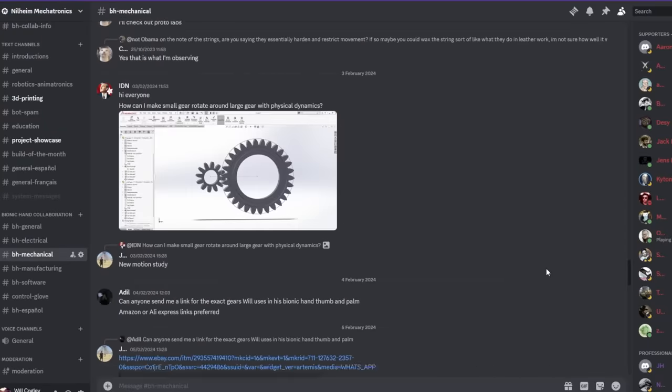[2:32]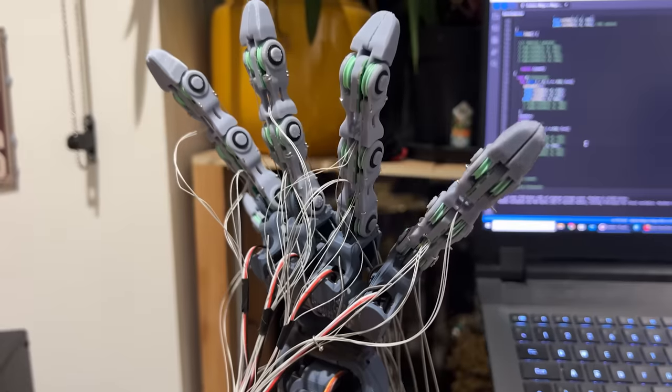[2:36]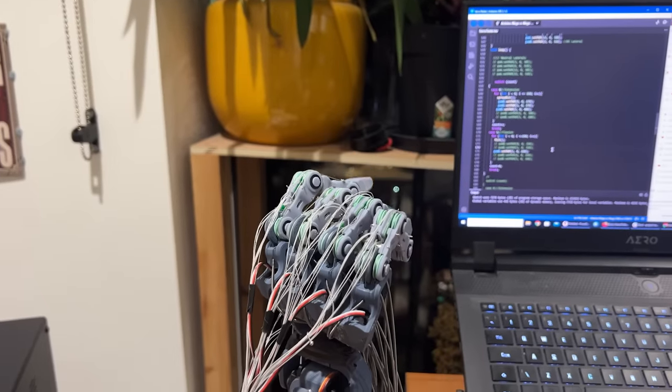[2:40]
Thirdly, I might not be available to answer all of your questions. As much as I try and respond to every email and private message, sometimes things slip through the net, so I would recommend the best place to get advice would be my Nilheim Mechatronics Discord server. I've added a Bionic Hand Builders channel for everyone doing this project to share progress, ask for help, and so on. The server is full of wonderful people who are already sharing their knowledge and innovations.
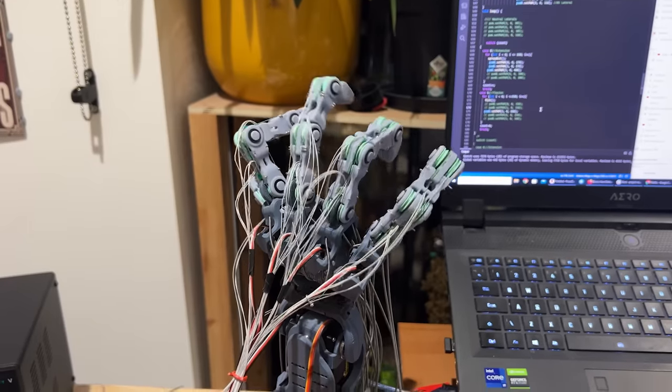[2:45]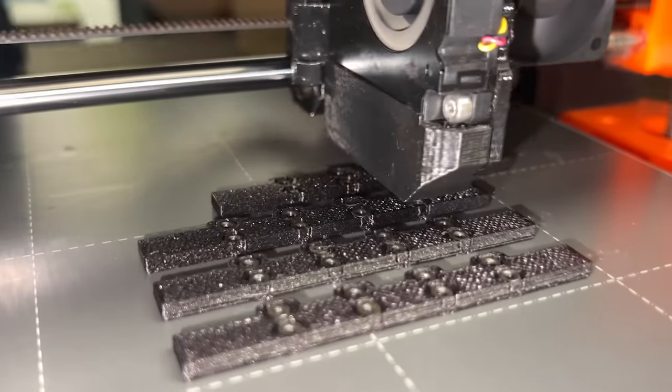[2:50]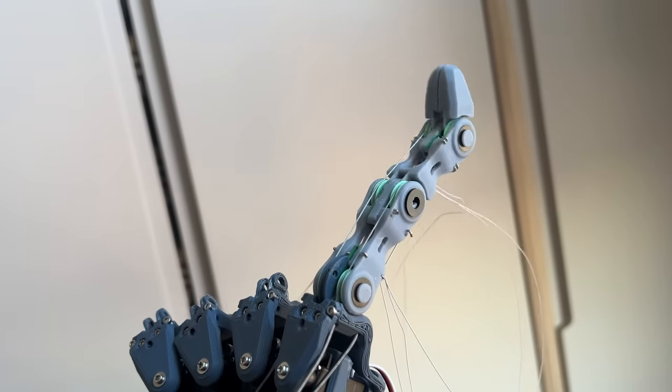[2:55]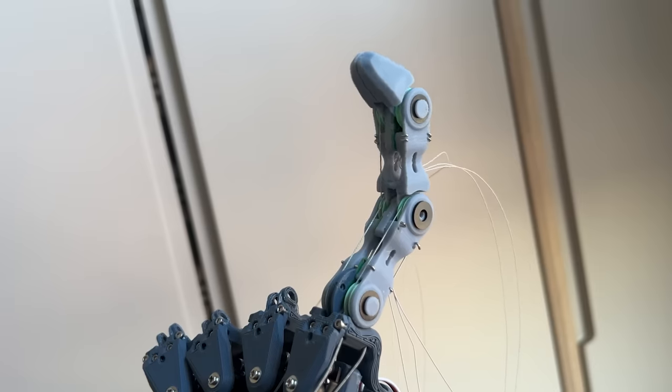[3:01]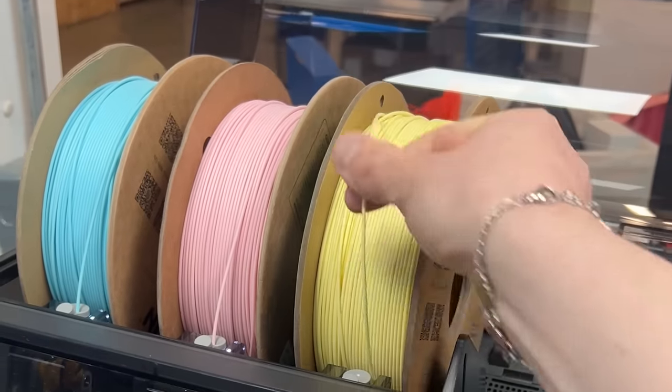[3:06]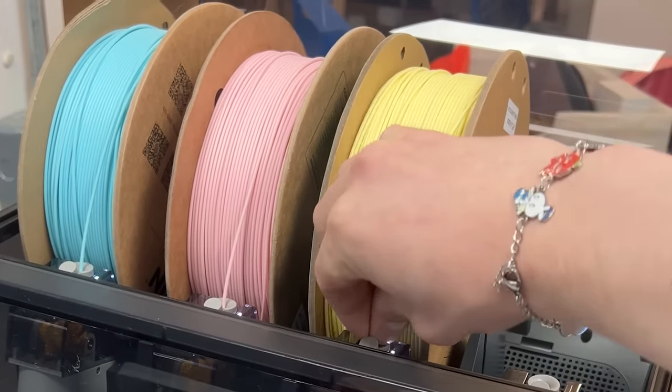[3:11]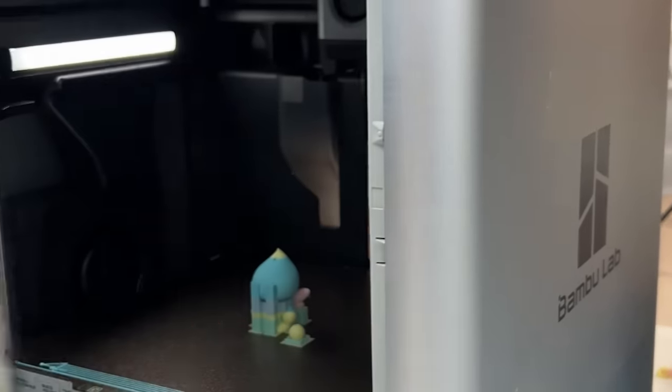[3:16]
So without further ado, let's get onto the hand. You'll need to do quite a bit of 3D printing to get the parts ready, and while I've experimented quite a bit with printing techniques, I'm pretty sure you can print everything on an FDM printer. My fingers are in fact resin, but there's nothing about their design that I don't think would be achievable on an FDM printer. If you're looking for a recommendation, I can recommend the Bambu Lab X1 Carbon series, which I began to use towards the end of the project after having used lots of different printers over the years. To put it simply and keep it brief, the quality is awesome, the speed is awesome, the slicer is awesome, and it's especially easy to use.
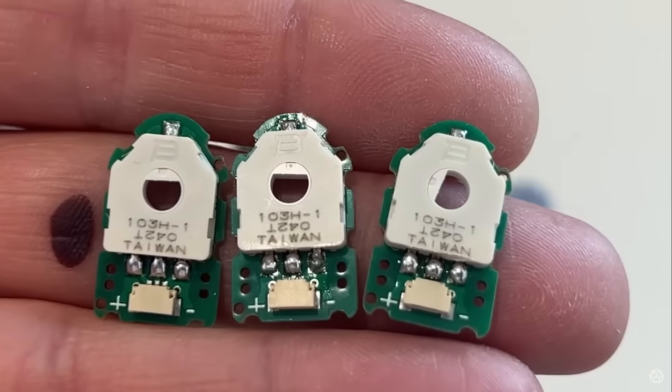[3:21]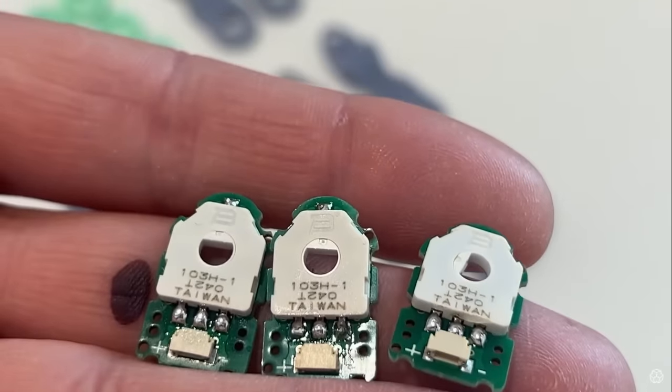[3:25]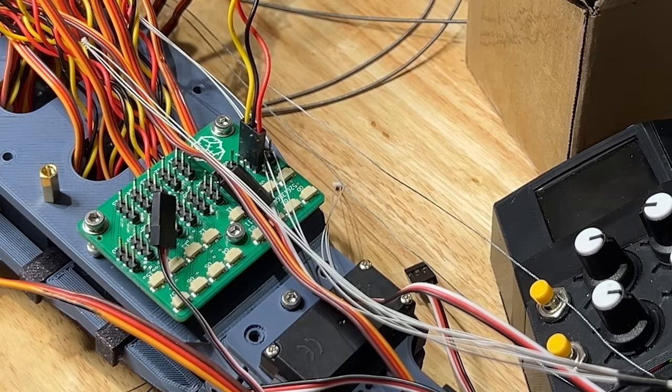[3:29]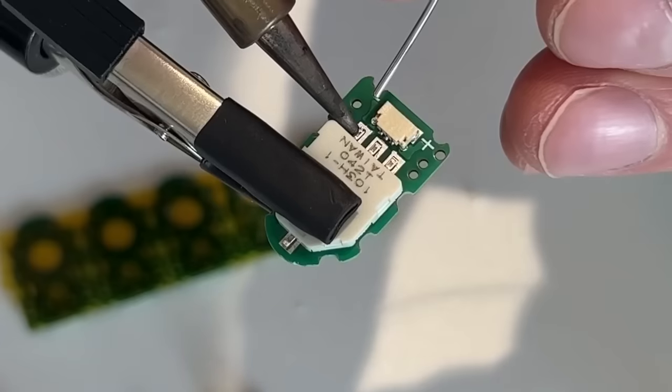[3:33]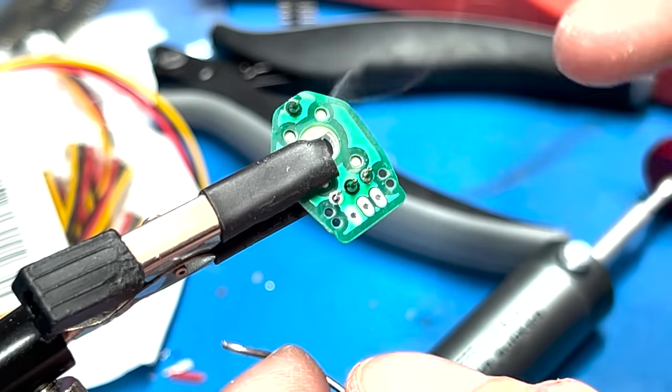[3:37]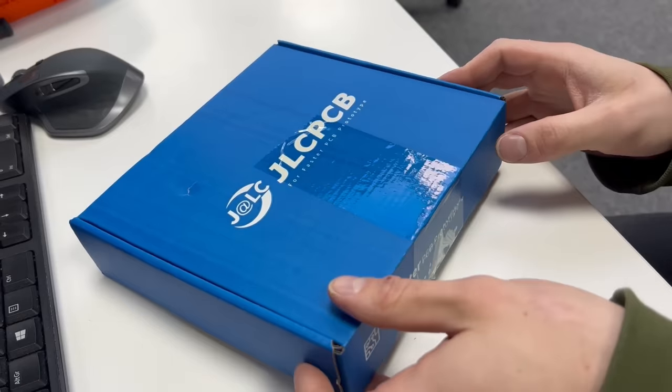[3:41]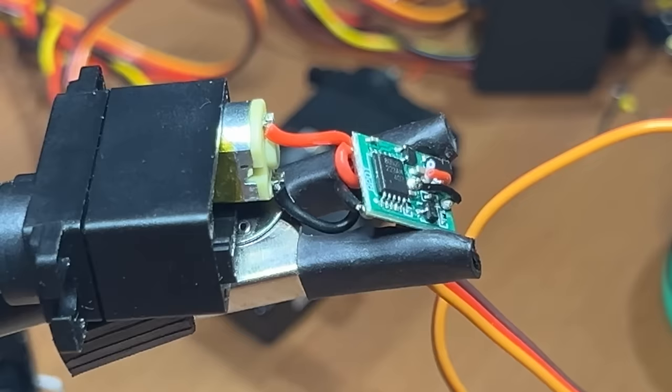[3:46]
Currently, my design uses two separate printed circuit board designs, which I have had assembled by the manufacturer because it saves a ton of time and my soldering skills are pretty bad. If you want to solder them by hand, you totally could. There are surface mount components on my boards, but they're still pretty simple. In any case, I've uploaded the PCB files and the assembly files, which I configured with JLCPCB's system, and I'll also include the rest of the files so you can manufacture them however you like.
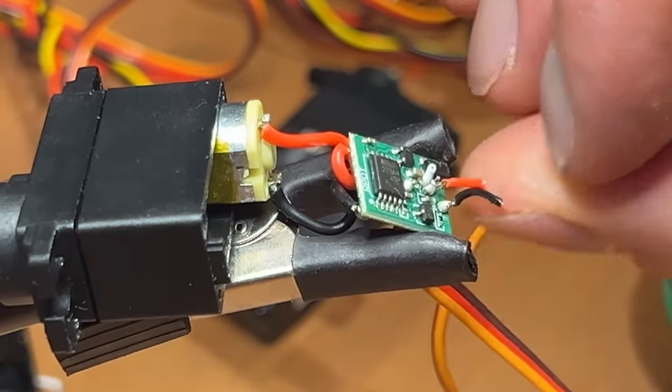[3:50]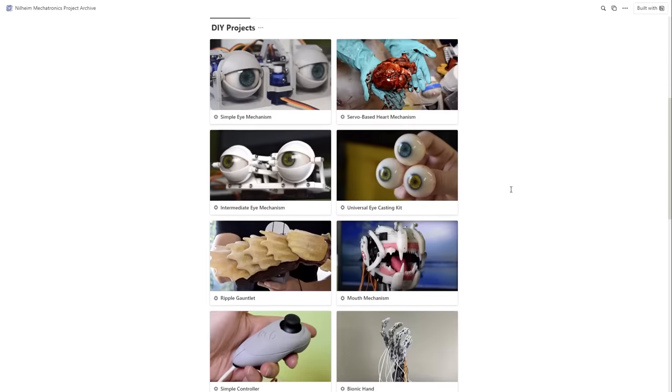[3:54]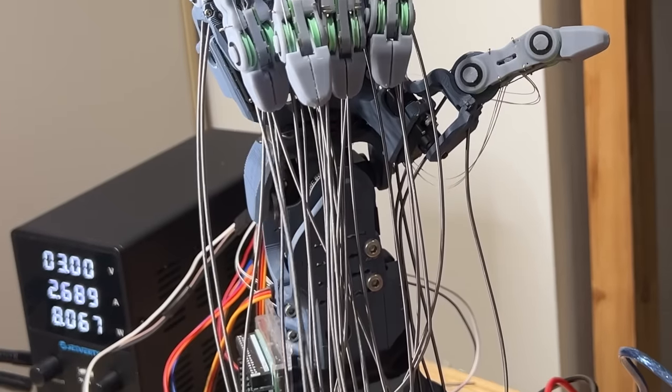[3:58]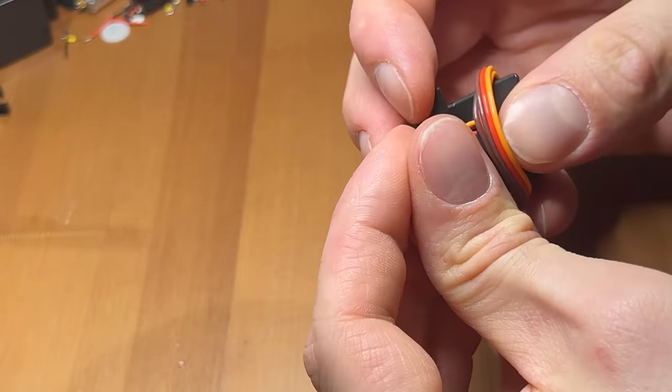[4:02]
There are other components you'll need, and all of these can be found on my aforementioned project archive page. With components like the servos, power supply, etc., take these as a suggestion rather than gospel, as a lot of small form factor servos have the exact same dimensions and can easily be swapped out.
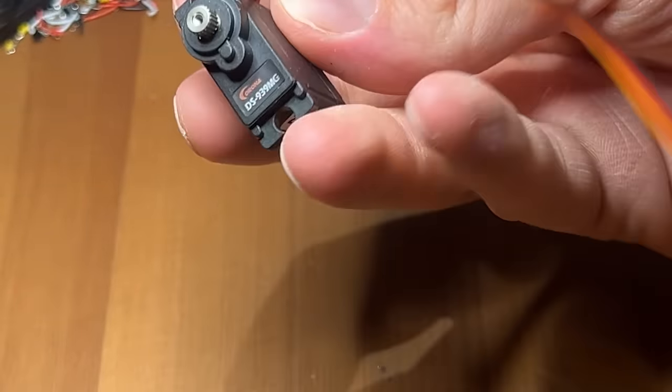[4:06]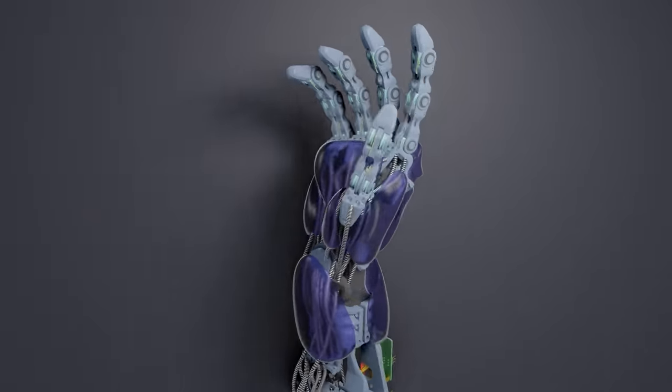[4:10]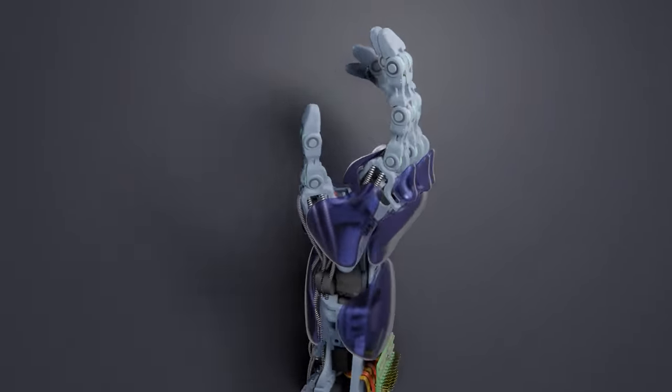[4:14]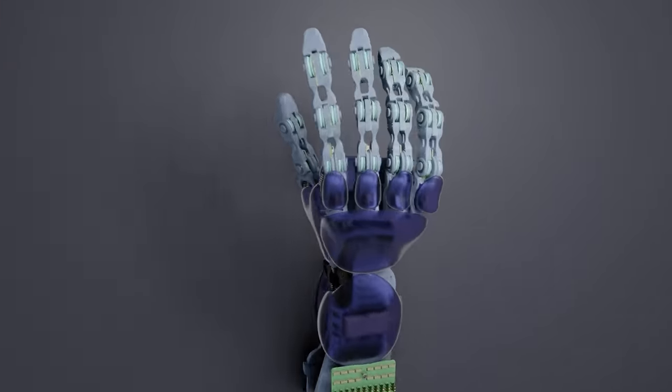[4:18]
And I know for sure some of you guys have more knowledge of electronics and control than me. So now we can begin assembly. Hopefully this video will be enough of an assembly guide, but you may want to keep the CAD open on one screen so you can reference it as you build.
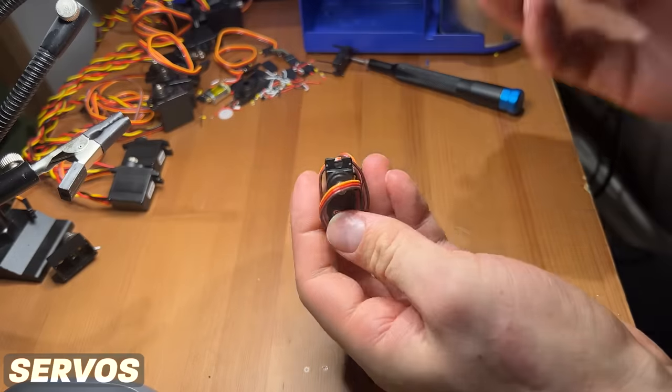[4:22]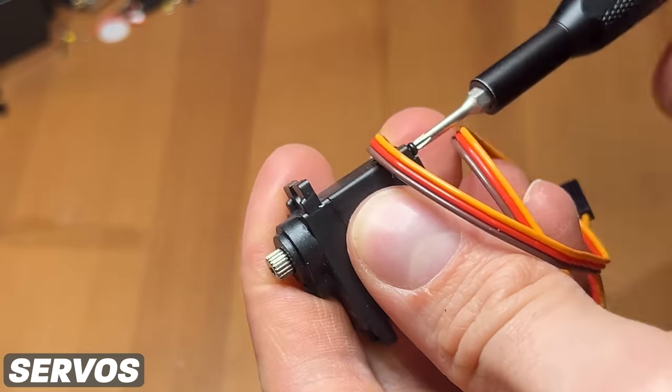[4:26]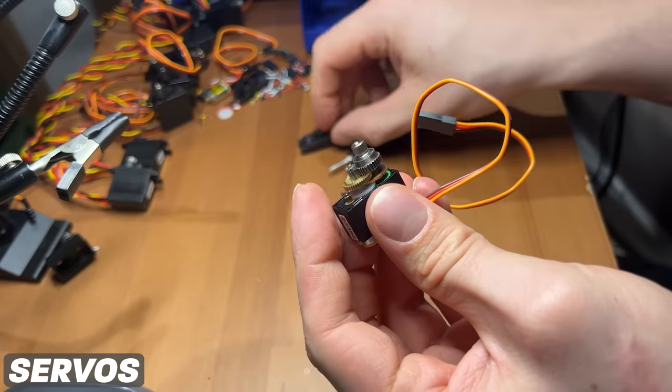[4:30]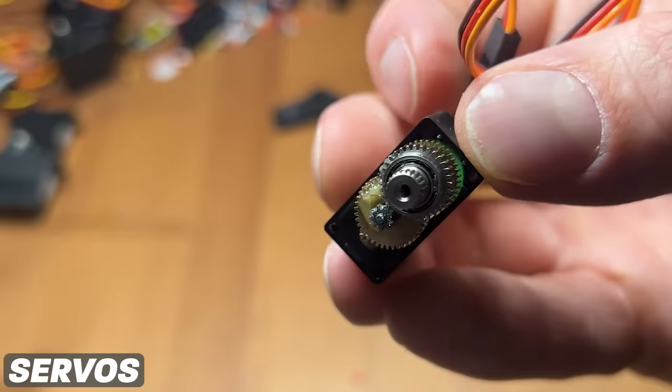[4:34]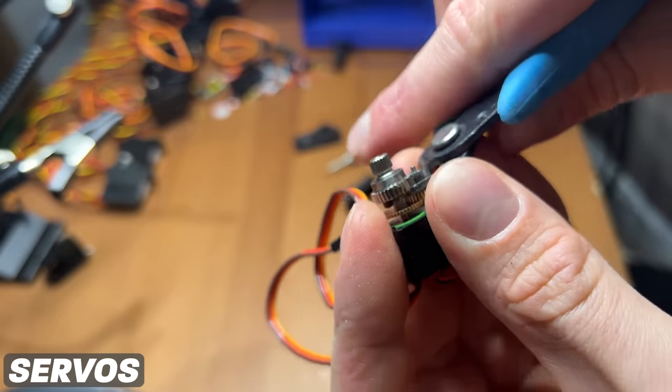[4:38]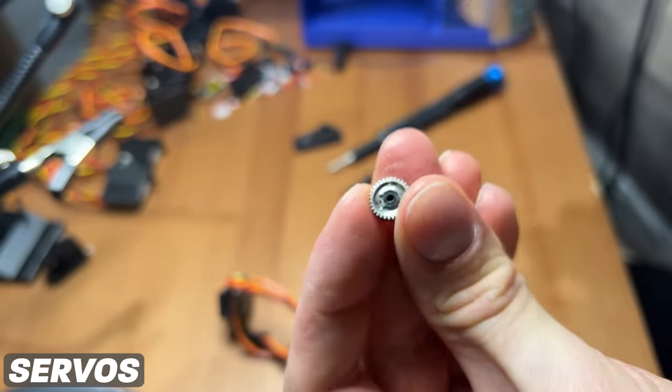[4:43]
The first thing you'll need to do is to alter your servos to take an external sensor reading and enable them to rotate freely. Different brands of servos will have different constructions, and so the method may be different, but if you're using these Corona DS939MG servos, the process is thus. Firstly, take off the servo casing by removing the screws and popping off the top cap. You'll need to remove the final gear and chop off the plastic block, which limits its rotation.
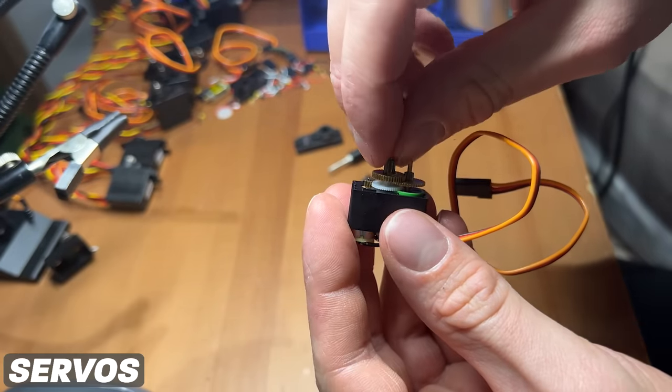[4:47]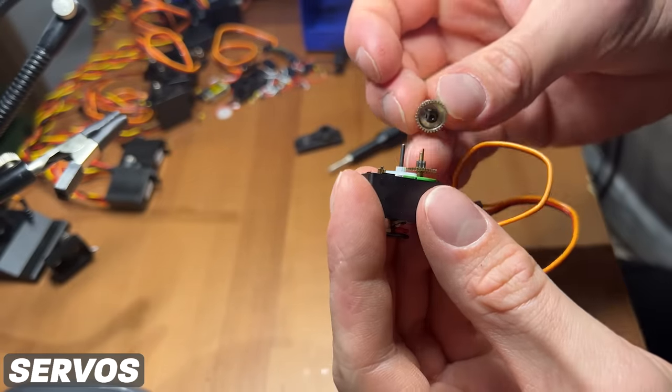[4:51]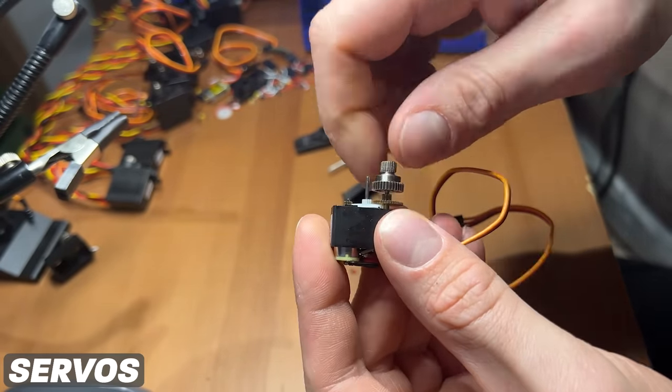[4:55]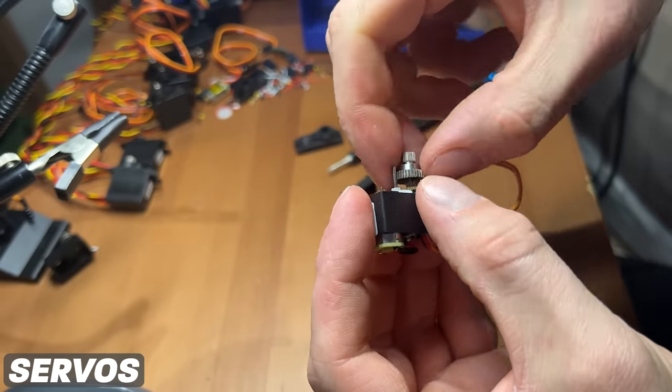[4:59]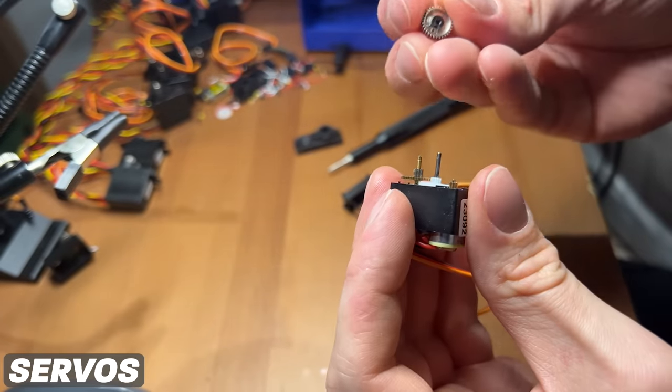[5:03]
Inside the small hole, there's some geometry which locks the rotation of the gear to the potentiometer below, so you can either use a tiny drill in a pin vise to make it a round hole, or do as I did and simply force the gear around to break the internal plastic off. I would, however, recommend that you use the drill to reduce friction.
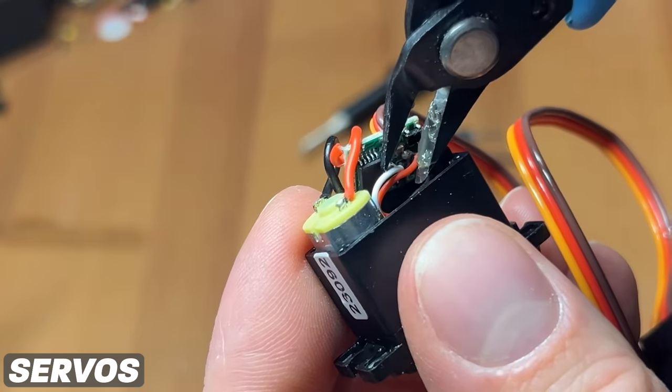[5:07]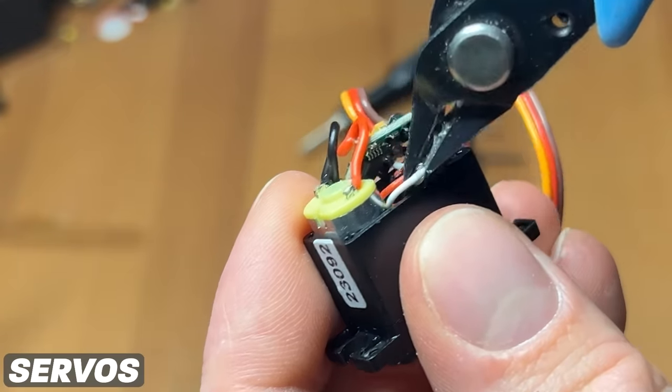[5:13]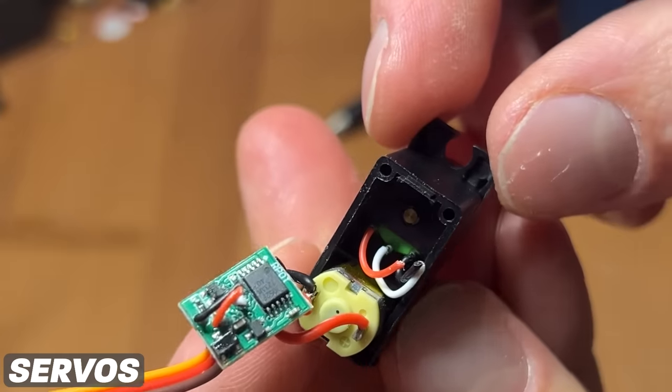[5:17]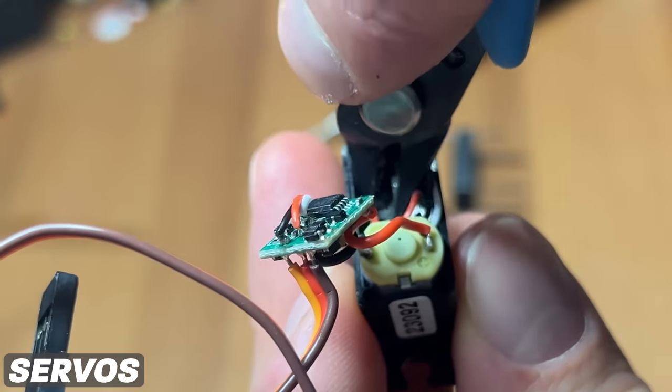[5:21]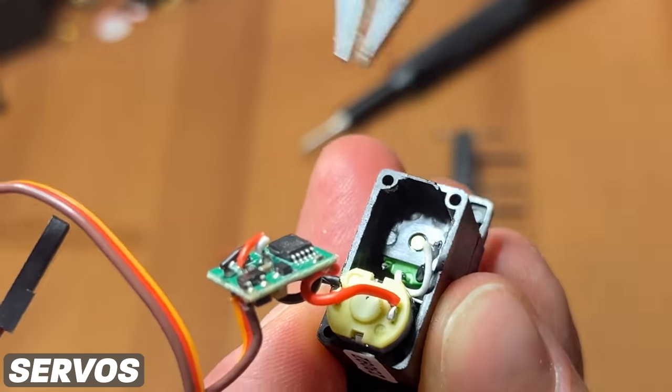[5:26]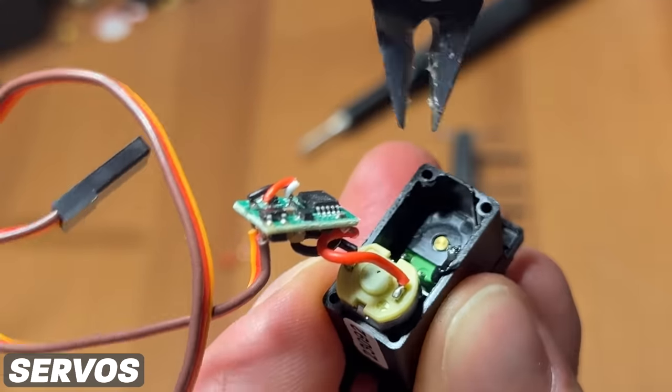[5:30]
You'll then need to disconnect the servo's potentiometer, which is the rotary sensor which allows it to work out its position. Take note of which wire connects to which part of the circuit board. It doesn't make a difference to wire the positive and negative terminals the opposite way around, other than that it will invert the signal, but it is really important you keep the central wire in the center. Snip the wires and make sure they're as short as possible and out of the way.
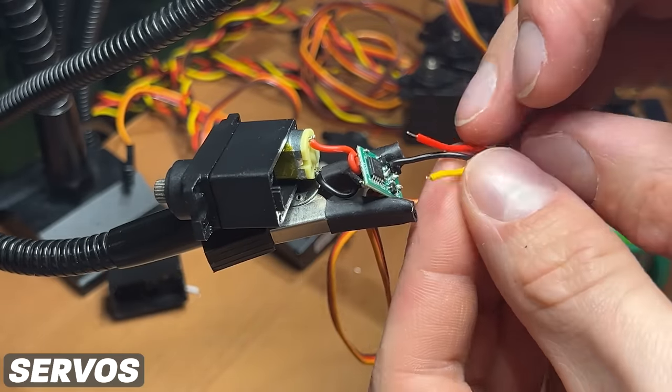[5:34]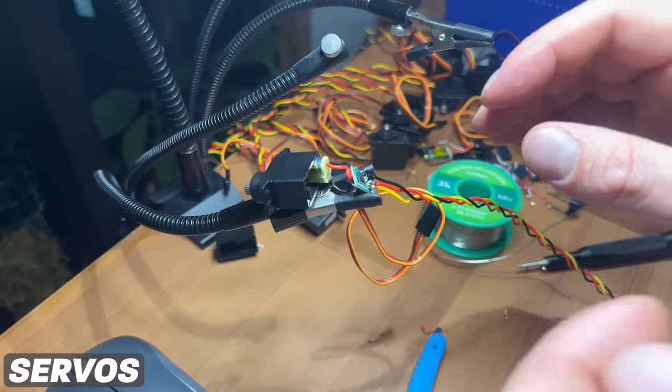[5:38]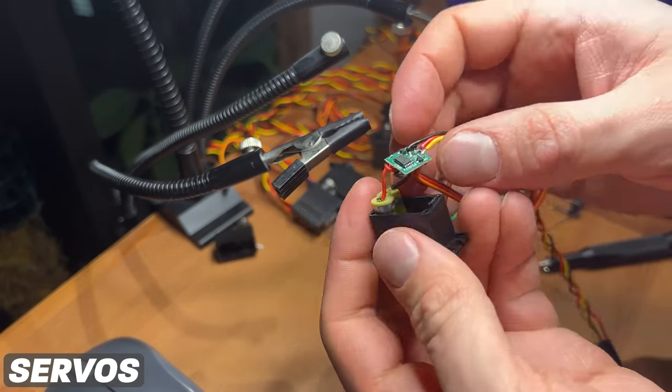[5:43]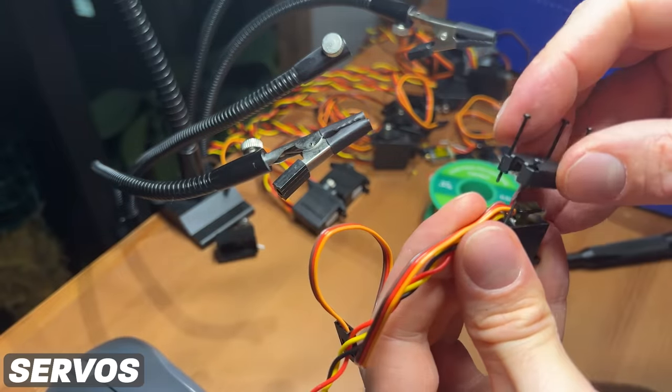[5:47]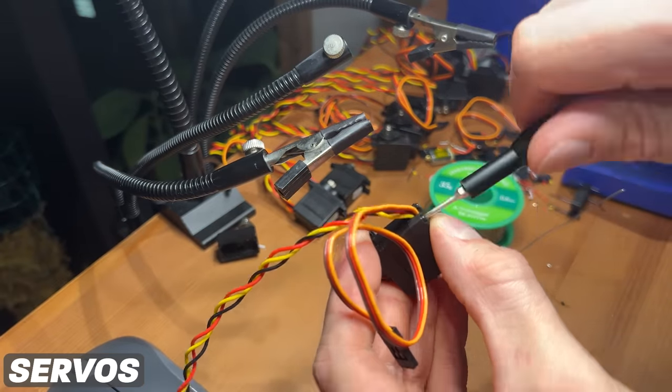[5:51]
Then take a female 3-pin Dupont connector, which is the standard 2.54mm pitch connector on Arduinos and basically every circuit board, and solder one end to the wires you just desoldered, making sure you do them the right way around. You can now reassemble the servos, and you may find you need to snip a small extra slot out of the base to make space for the new cables. You'll need to do this 15 times.
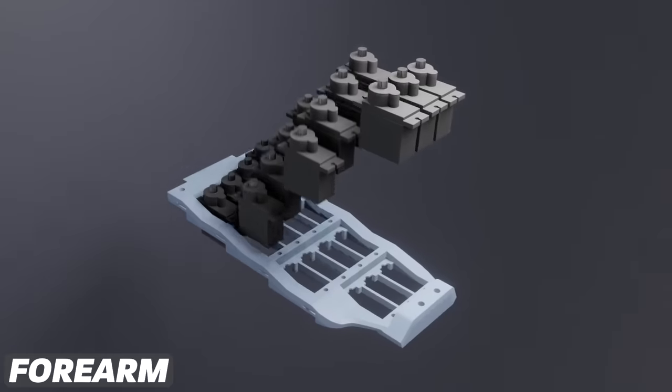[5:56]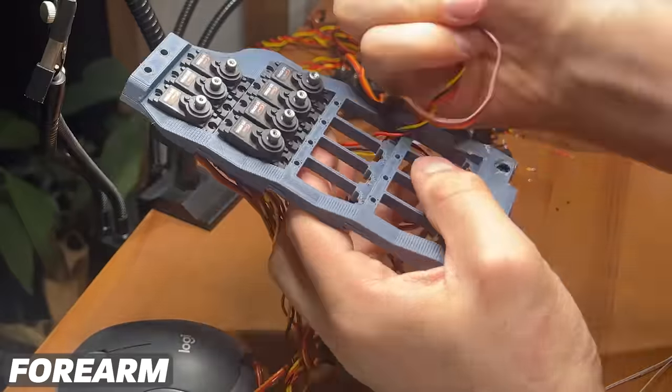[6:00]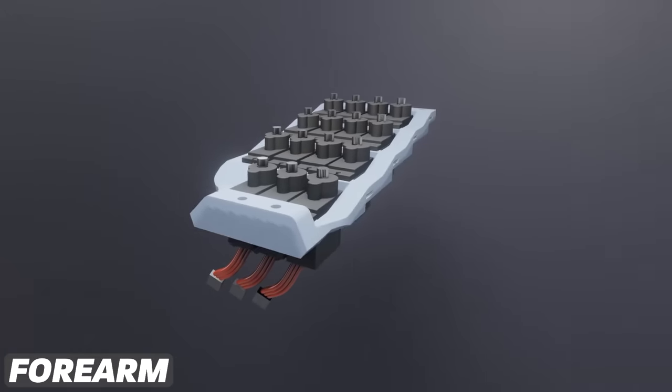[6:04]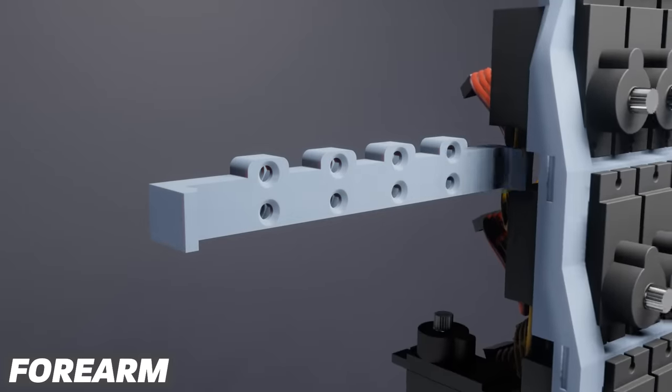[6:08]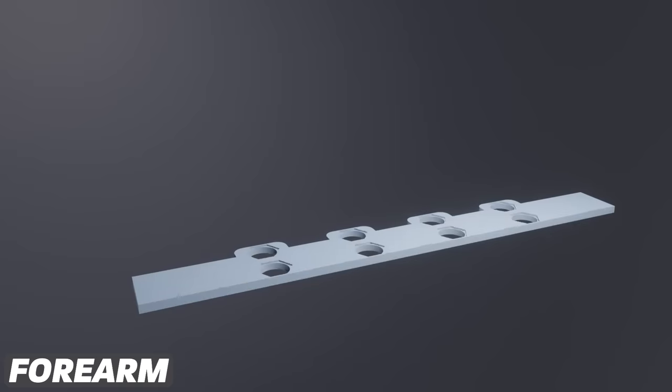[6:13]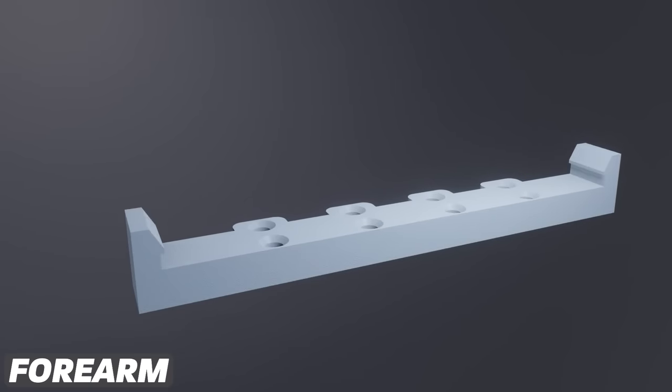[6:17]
You can then drop in all 15 servos into the front side of the forearm. You'll notice which way around they're supposed to go because there's a little slot where the wire is supposed to pass through. Each row of servos is held in by a retaining strip that fits on the back and accepts an M2 screw. To make these, you'll need to add a pause in your 3D print in G-code, pop in 8 M2 nuts and resume the print.
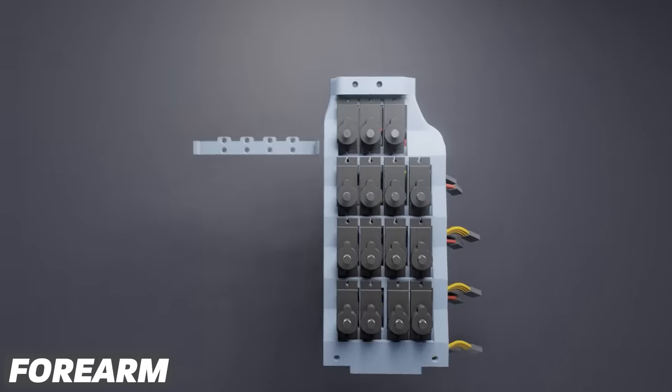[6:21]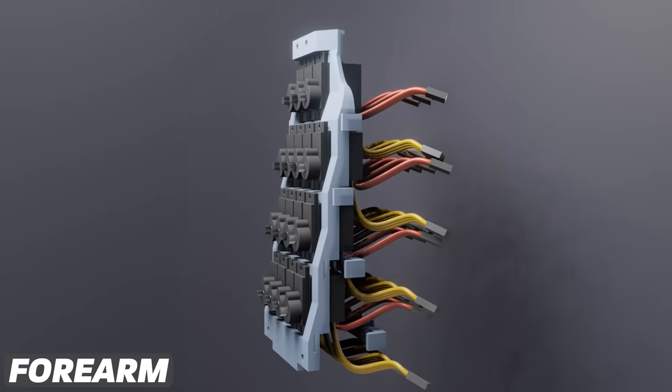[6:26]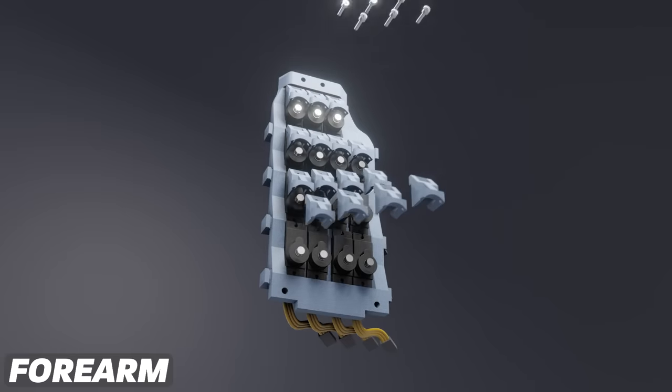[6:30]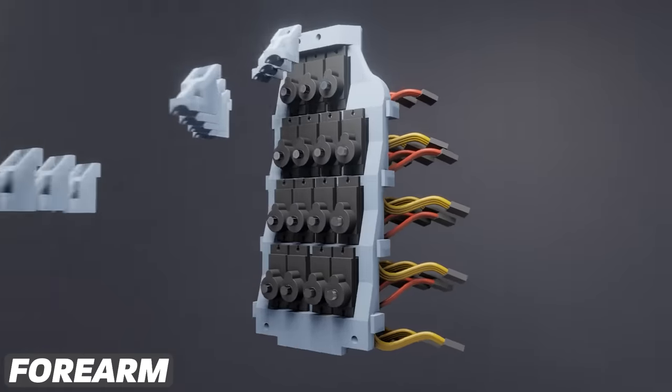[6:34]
These are designed to slip in behind the servos and snap into place. They don't need to be held too rigidly because they're only there to hold the nut in place. Finish securing the servos by firstly placing the cable housing retaining blocks and passing the screws through this, the servo, the housing, and finally the nut held in the retaining strip.
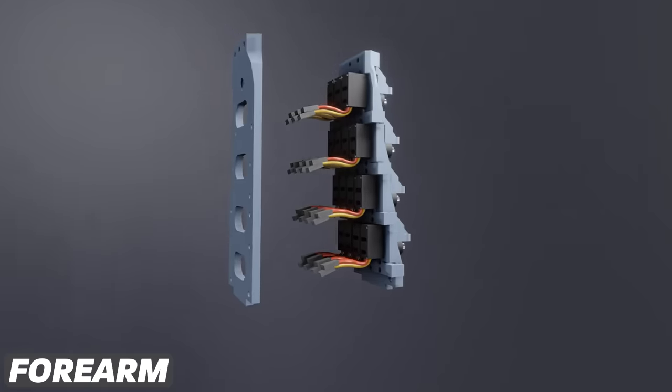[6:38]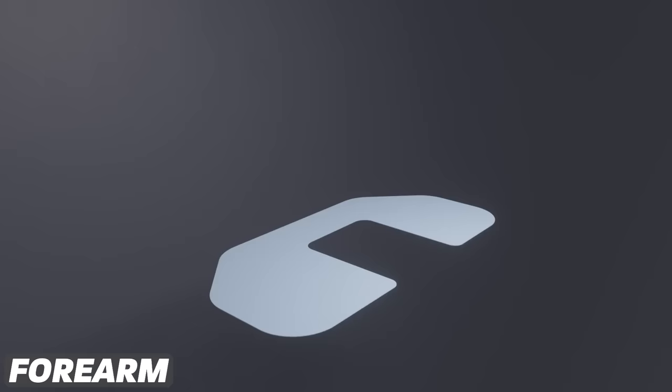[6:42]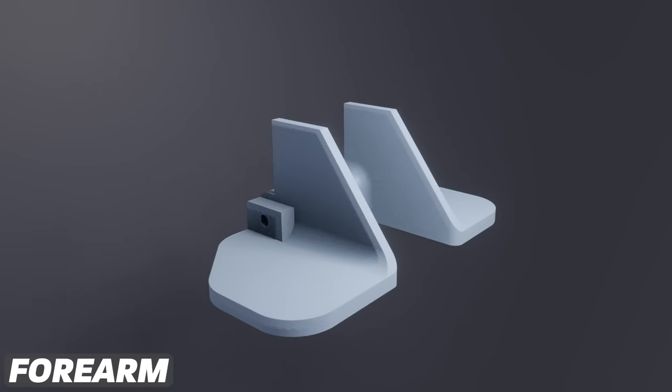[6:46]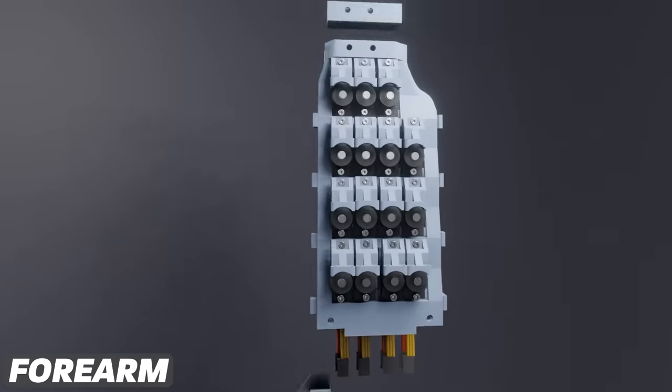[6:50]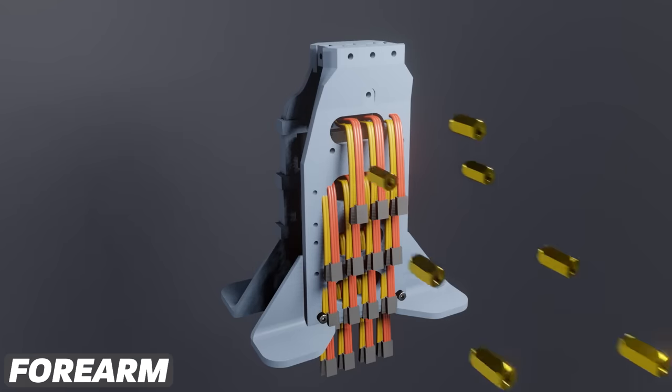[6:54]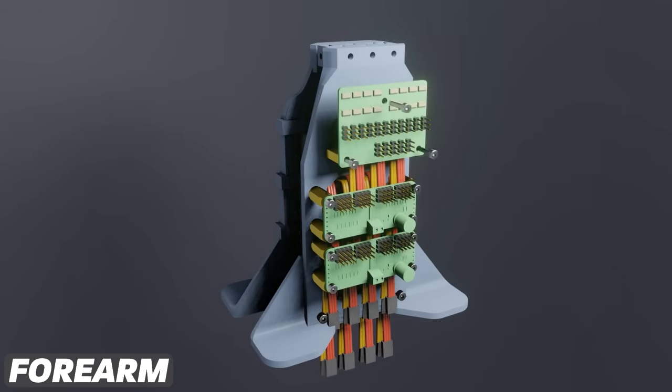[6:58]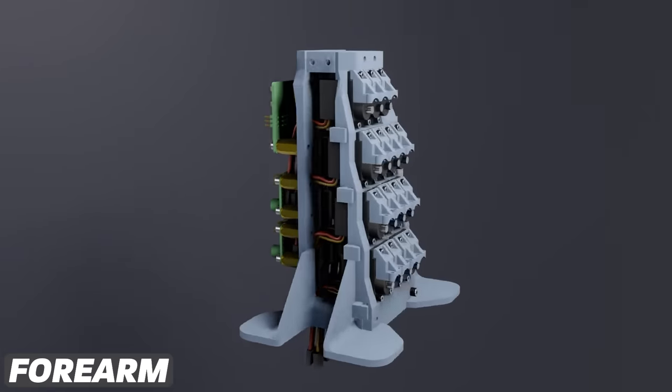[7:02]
Now put the back half of the forearm frame in place and feed through the servo cables. The forearm feet also have a print-in-place nut, so using a G-code pause, drop in 2 M3 nuts per foot. You can put these in place and fix them with a 20mm screw on each side, and then attach the circuit boards with some standoffs of around 15-25mm. You may want to do this before putting the whole back panel on, although it will be trickier to feed the cables through. It's entirely up to you.
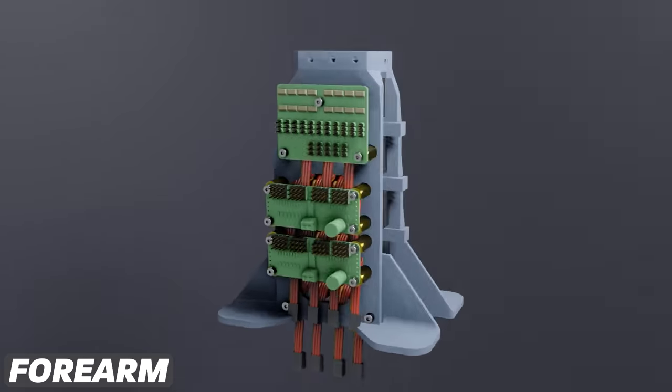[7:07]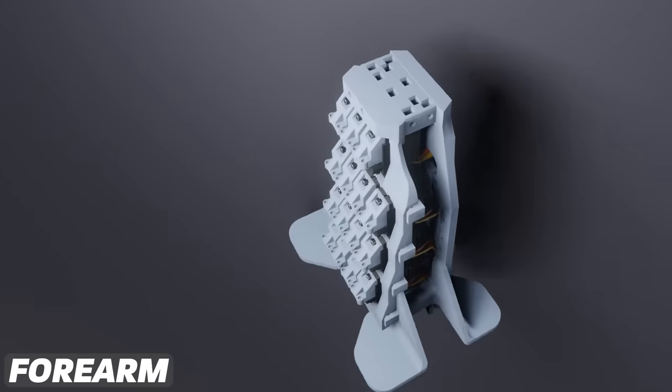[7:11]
Take note of the block which goes at the top of the forearm and will connect to the wrist. You don't need it yet, but you can put it in place. Now we need to build the wrist.
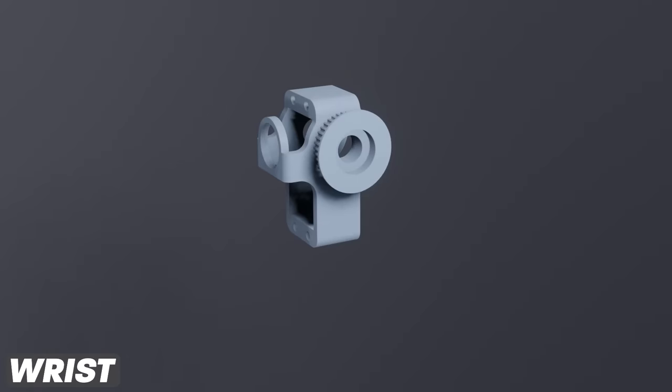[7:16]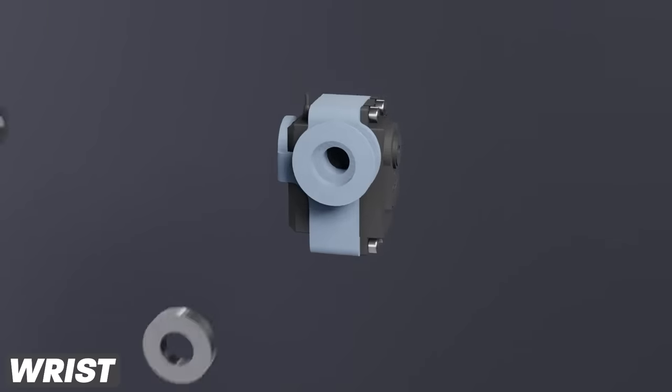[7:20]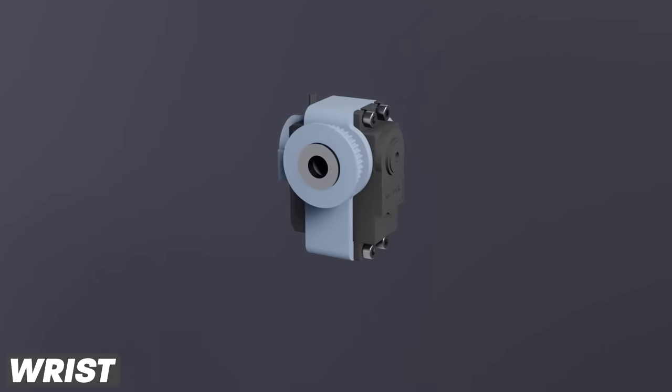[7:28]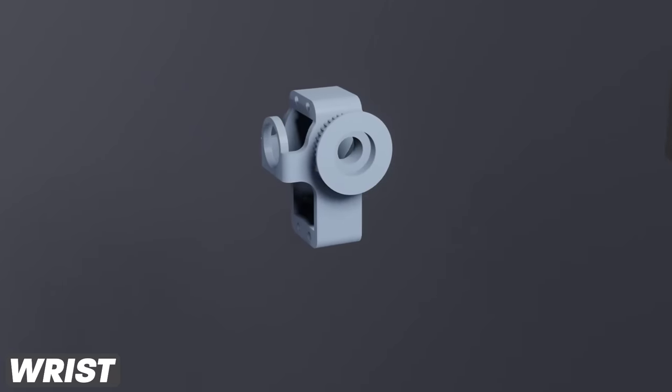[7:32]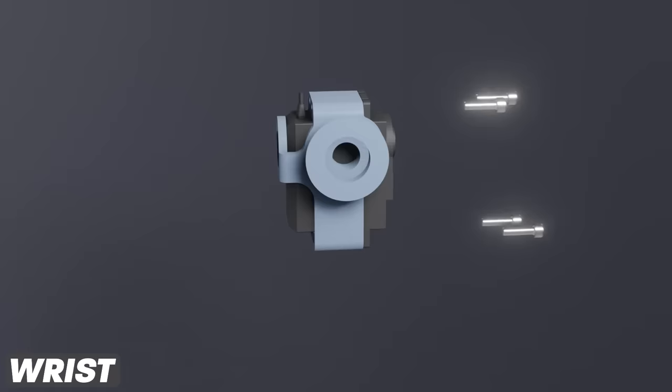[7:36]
First, take the core wrist servo housing and pop an MG996R servo or similar into the gap. There are two servos in this part of the arm, and you'll need to make sure they're both roughly centered. So use a servo tester or just the basic Arduino servo example sketch to center them. You may need to unscrew the base of the servo to get it into position without bending the wire too much.
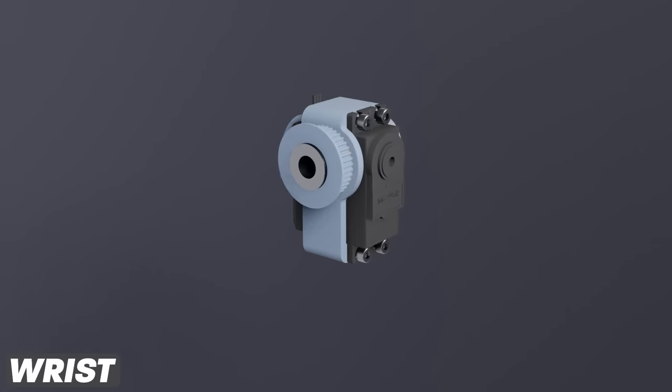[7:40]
Secure it with M3 screws threading directly into the 3D printed material, then put the three bearings in position. Take the front side of the wrist and assemble the tensioning idler with a triangular piece, followed by an M4 square nut, washer, M4 plain nut, M3x6mm screw to keep the wheel in, and two M4x6mm screws to lock everything
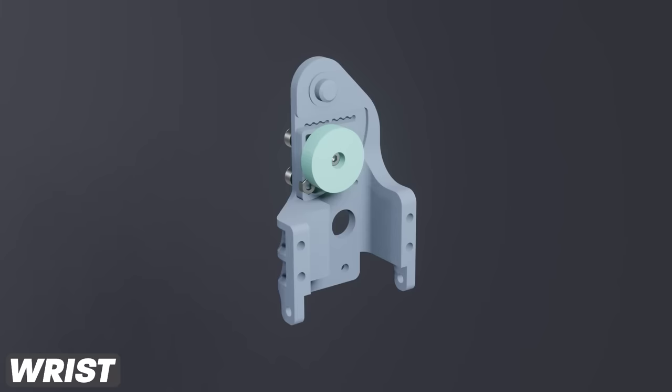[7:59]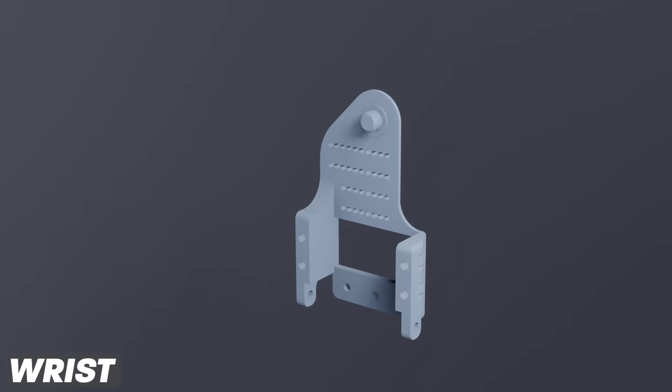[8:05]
in position. This is probably a mechanism you'll want to refer to the CAD to build, or just rewind a lot of times. Onto the back side of the wrist.
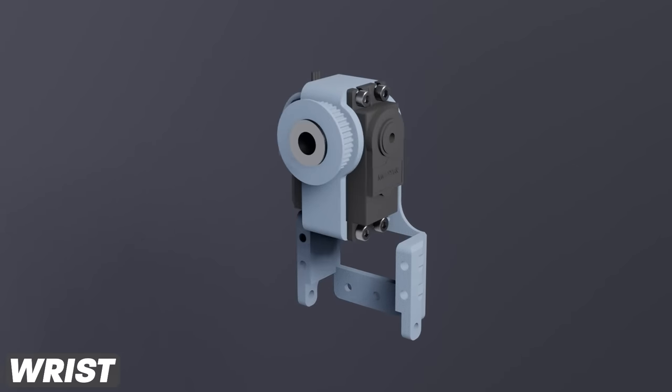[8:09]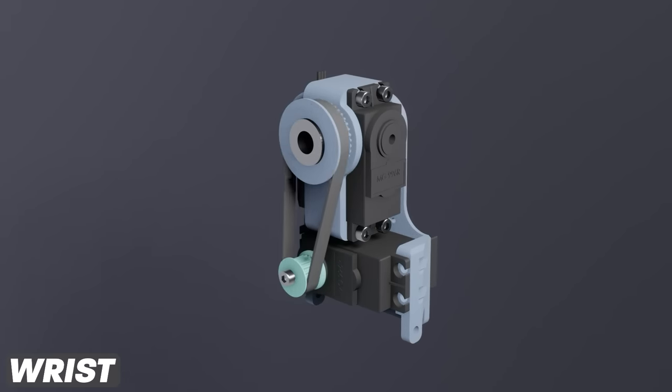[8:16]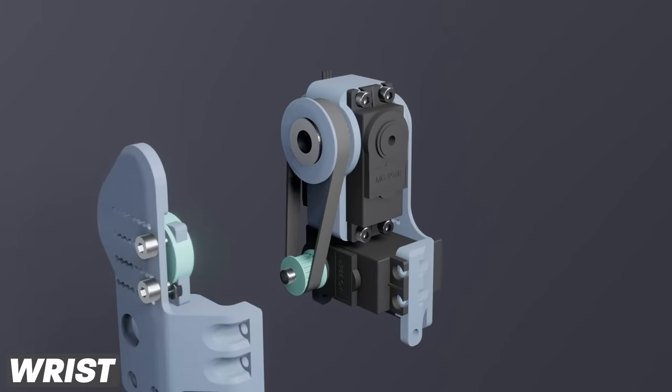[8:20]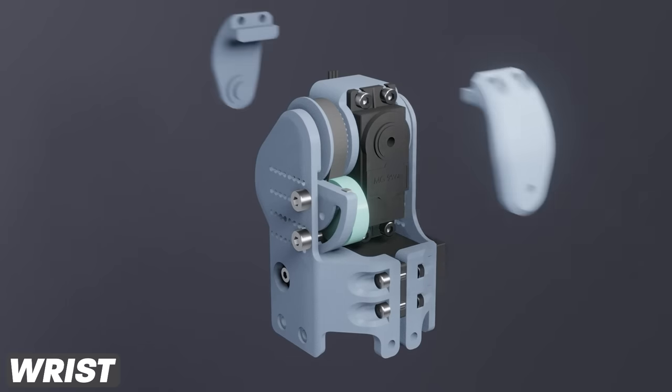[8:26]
You can place the servo assembly we built earlier, a second servo with a printed pulley and retaining M3x12mm screw, a roughly 210mm GT2 belt, and four 16mm M3 screws with nuts to hold it all together. Also, put on the wrist palm adapters, but not before setting your servo to its center position.
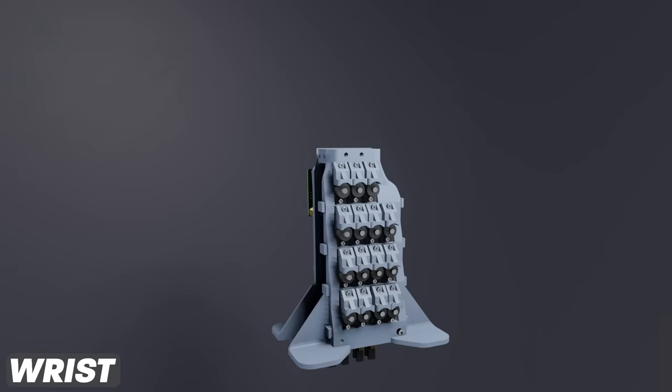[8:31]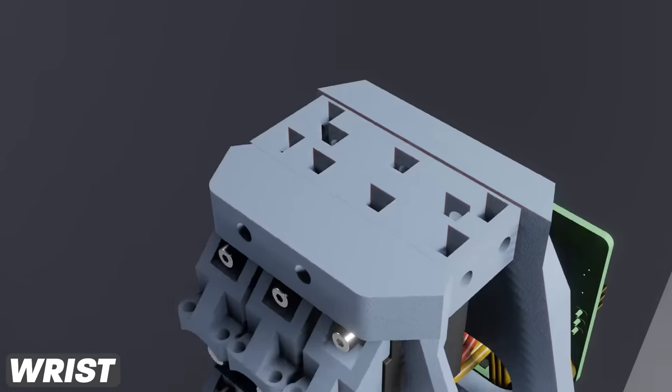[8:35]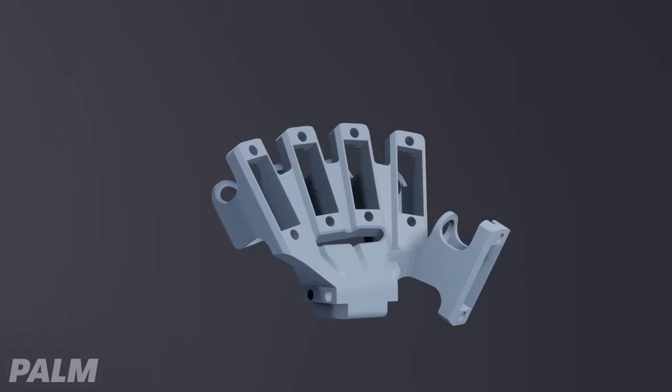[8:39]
Attach the wrist to the forearm using 9 M3 nuts in the wrist block and M3 screws of various lengths to connect it all up. Onto the palm now. This one's pretty straightforward.
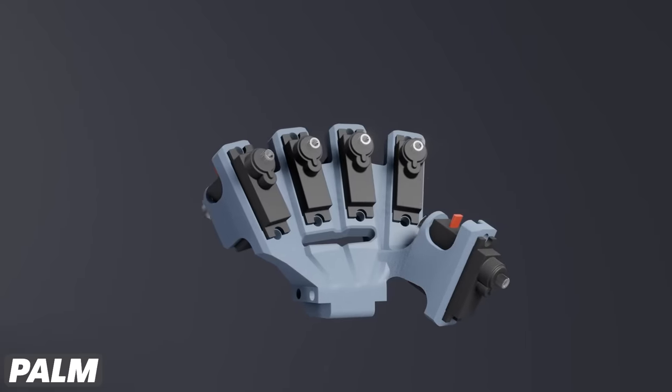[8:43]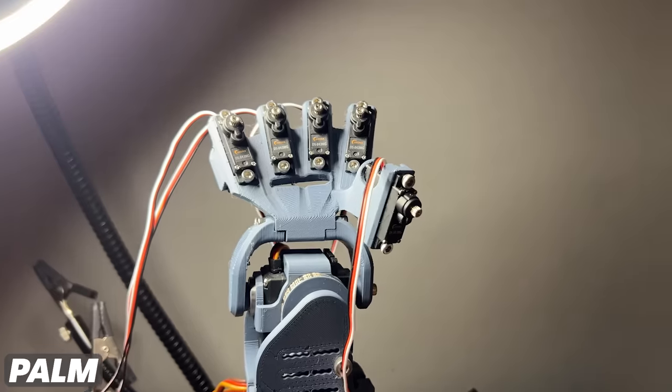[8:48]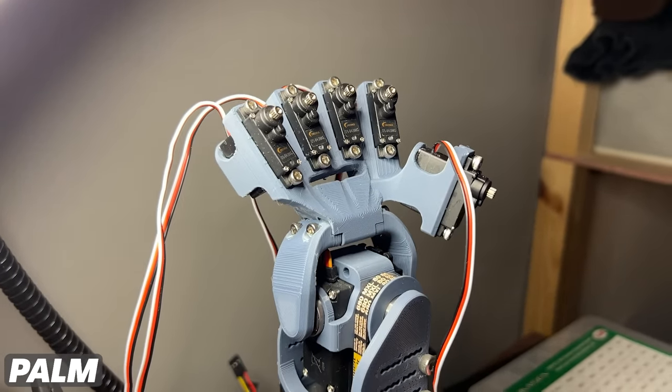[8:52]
Just put 5 DS843MG servos into the hand. Again, you might need to unscrew the base to be able to get the wires through. Also, make sure you've set the servos to their neutral middle position as before.
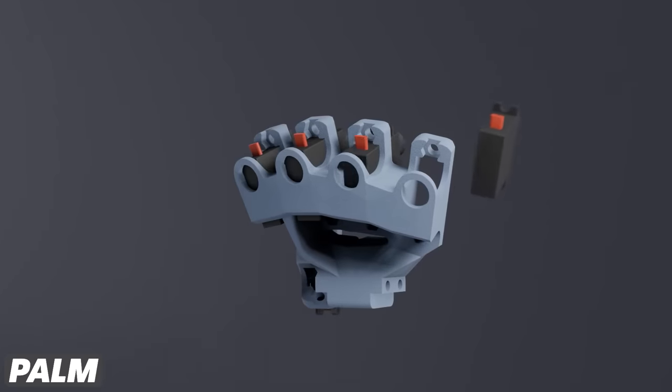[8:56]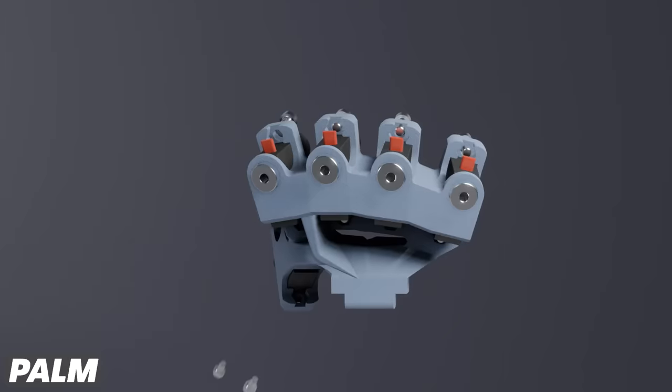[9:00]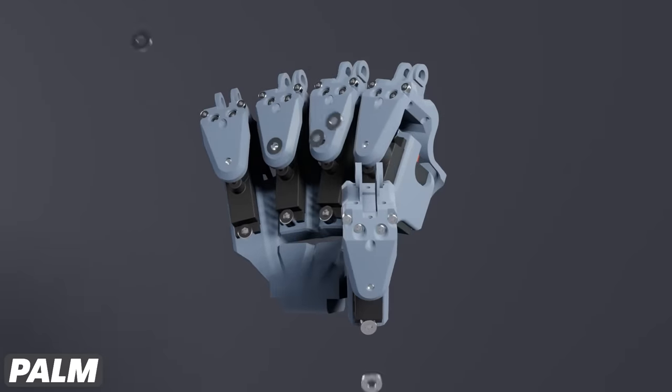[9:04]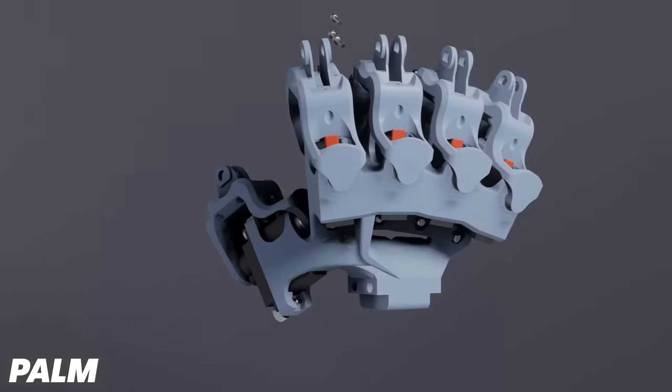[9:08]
Secure the servos with M3x8mm screws, and on each knuckle you need to put a bearing, and then you can attach both sides of the MCP link component. These are held together with four 6-8mm M1.6 screws, threaded straight into the plastic.
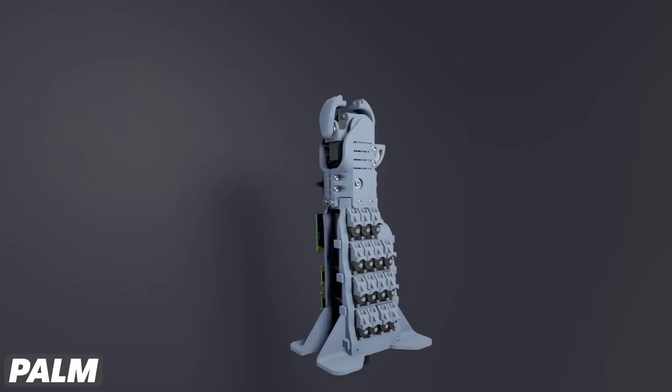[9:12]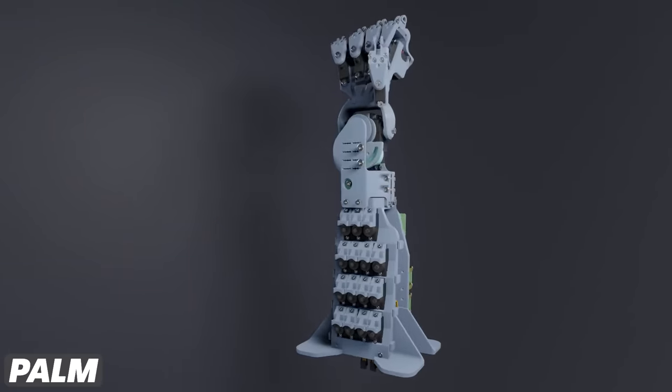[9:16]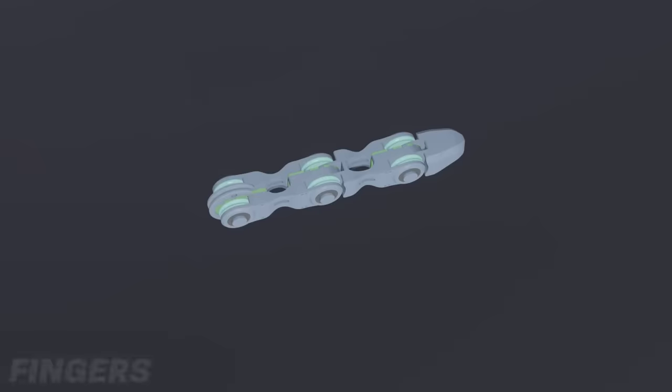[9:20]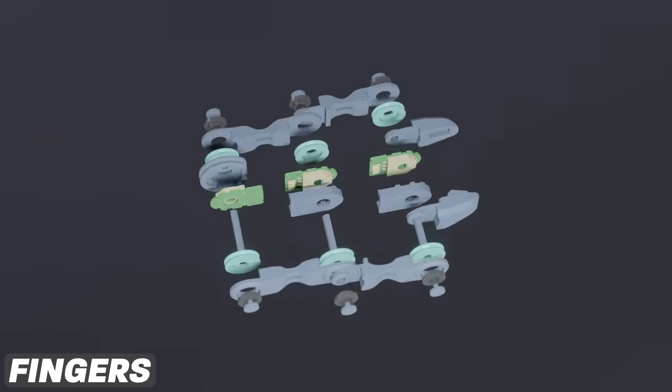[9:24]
Attach the palm onto the wrist palm adapters with two long 35mm M3 screws and nuts on the end. Now we can move on to the fingers. The fingers are actually really simple, they go together like this. Did you get all of that? Alright, maybe I should delve into some specifics.
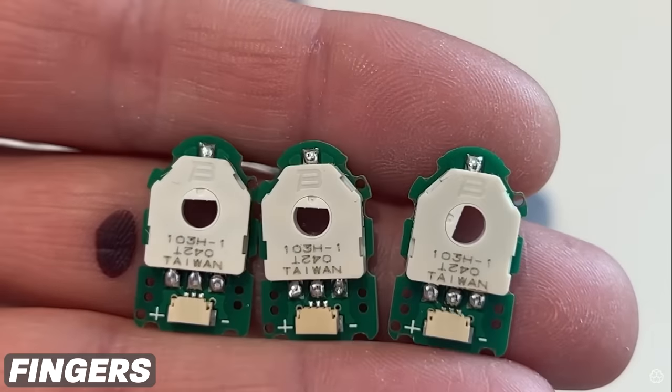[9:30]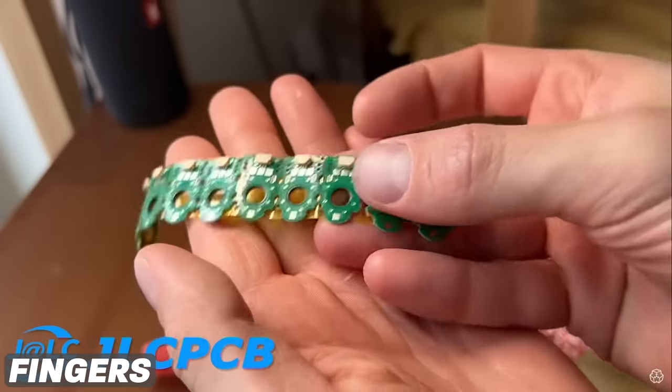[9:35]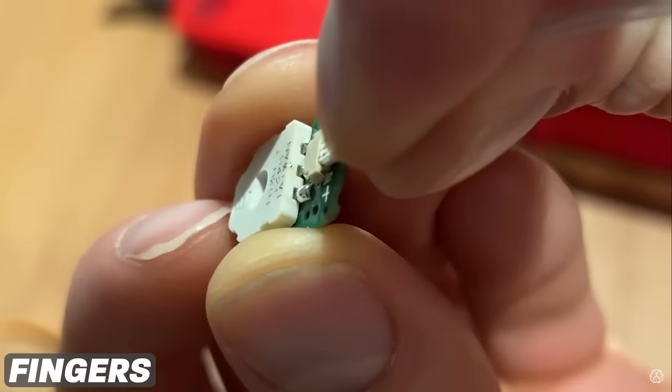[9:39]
The first part I'd recommend you make is the potentiometer boards. Now, I had these assembled by the manufacturer with the JST SUR connector already on the board, but since I couldn't find a supplier for the potentiometers I wanted to use, I just soldered them myself.
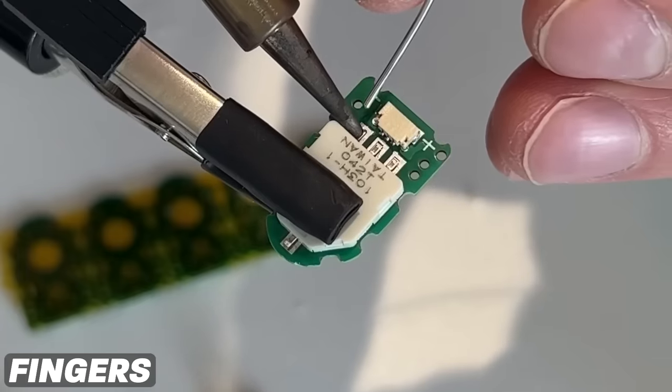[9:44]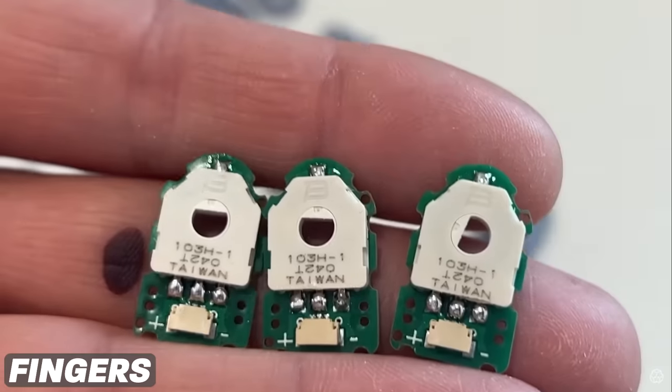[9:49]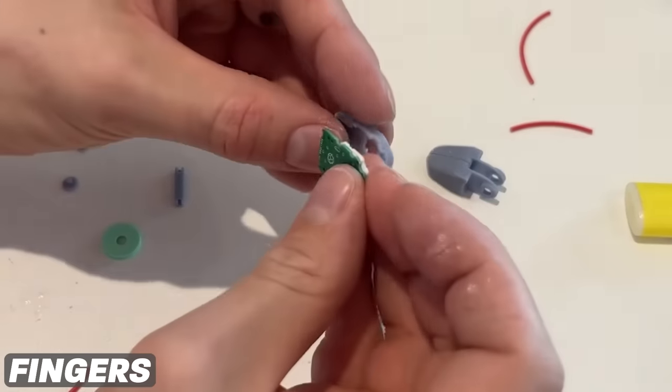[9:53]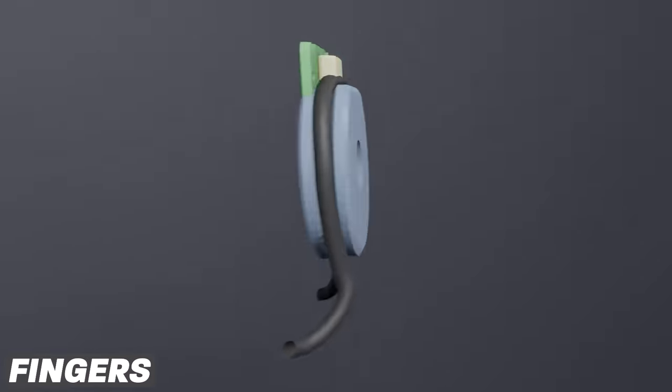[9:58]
The company Bourns makes this flat pot which I've used for years. I do think it might be time to explore other options, but the form factor is just so perfect that it's hard to replace. These just clip into a 3D printed housing, one type for IP joints and another for MCP joints.
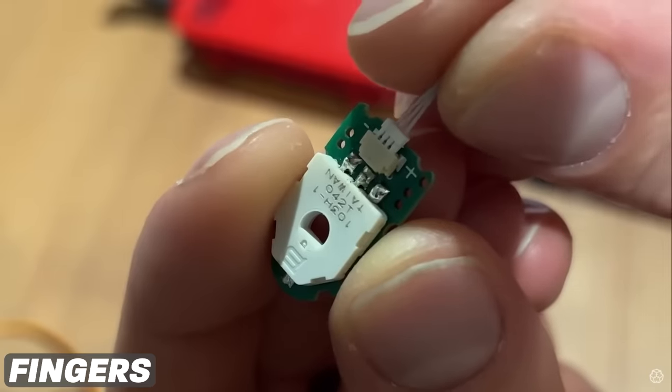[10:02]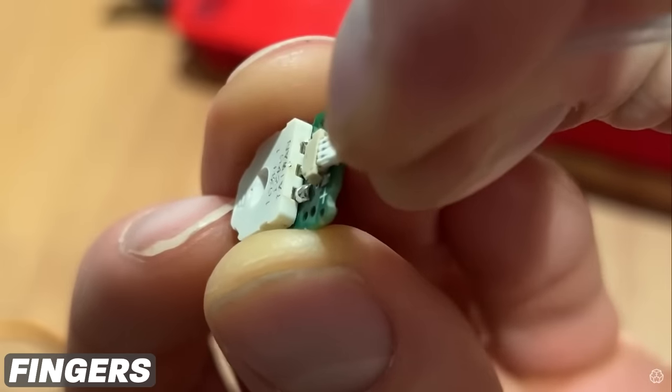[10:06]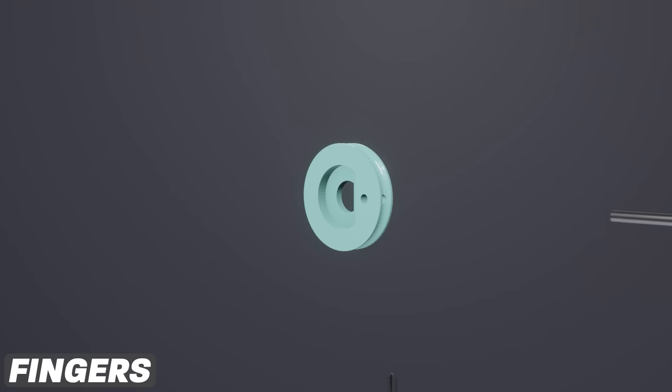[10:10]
You may want to plug in the SIR cable now, or you may find it less fiddly to do it once it's fully assembled, although you will probably need to use tweezers if you're doing it that way. You can also prepare your pulleys by feeding some fishing line through and making a knot.
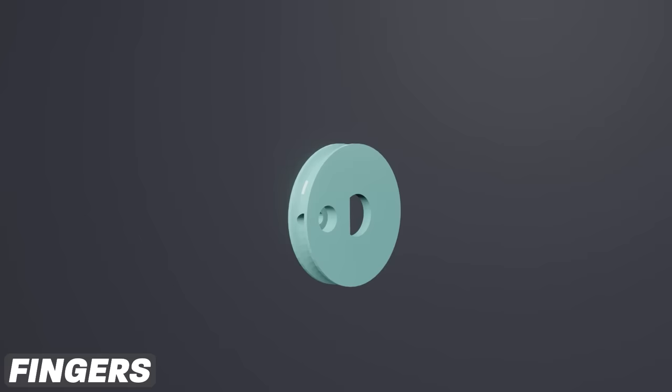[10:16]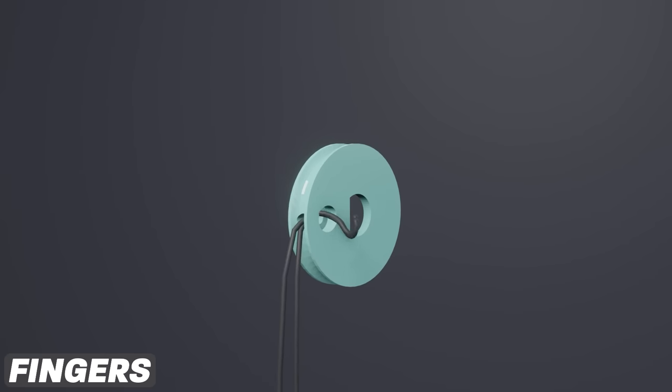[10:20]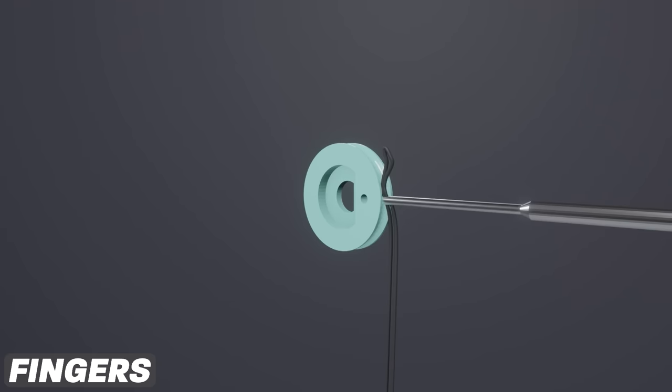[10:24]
I've designed them so you use a tiny pin like a sim tool to poke firstly into the hole and then out of the adjacent hole. Knot it and trim it close. You want the knot to be flush with the side face of the pulley.
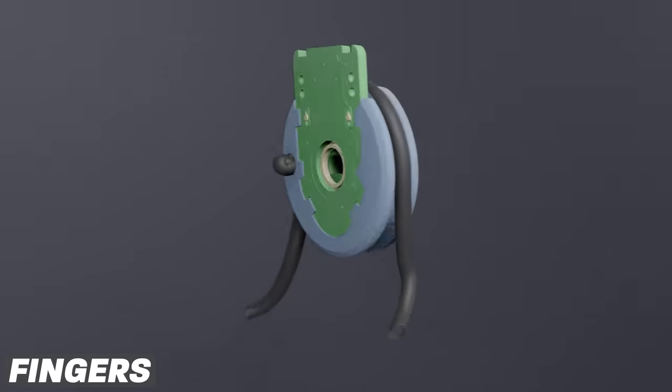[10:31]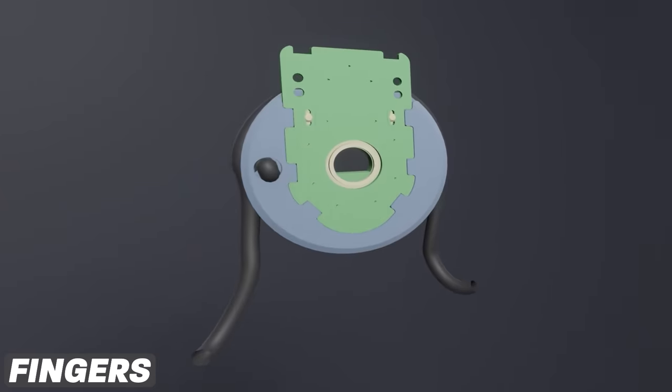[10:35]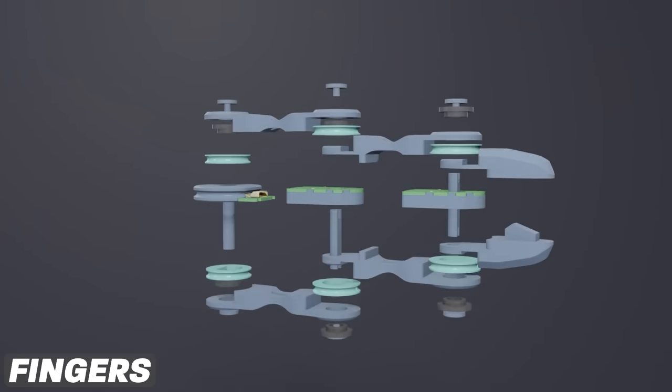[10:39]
I used a lighter to tidy up the frayed ends, but for safety reasons I can't recommend you do the same. The MCP pulley works in much the same way, but the cable passes through the PCB. Also, I recommend using much more wire than you think you need.
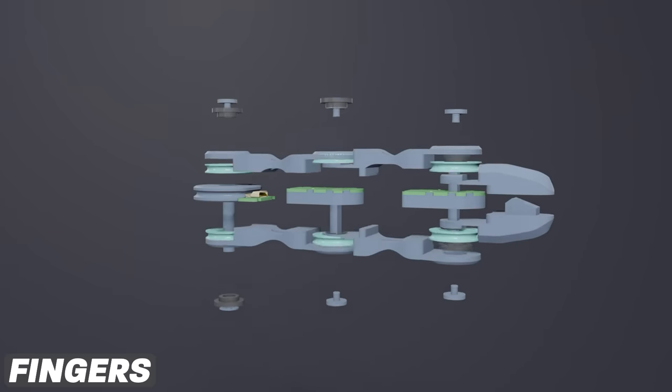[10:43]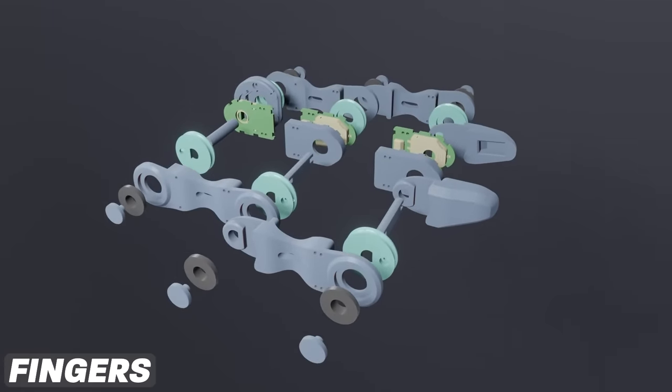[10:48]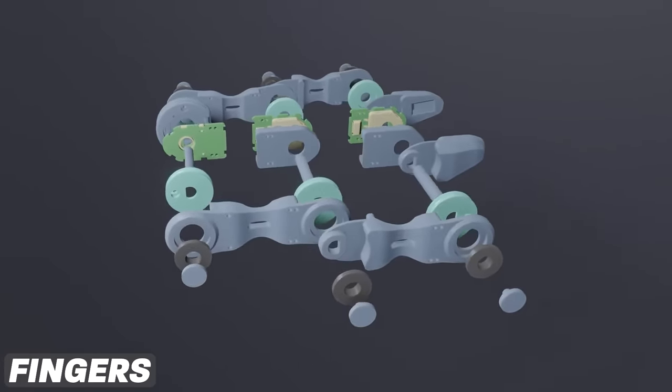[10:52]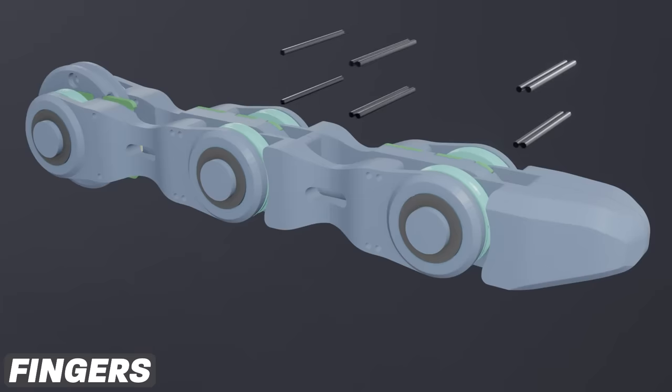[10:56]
To complete the fingers, it's just a case of putting each component together in a stack and securing with a central axle rod and snap fit end caps. This is going to be one of those parts where it's easier to just look at the CAD model while you're building. I also have been inserting a single core wire and bending it around.
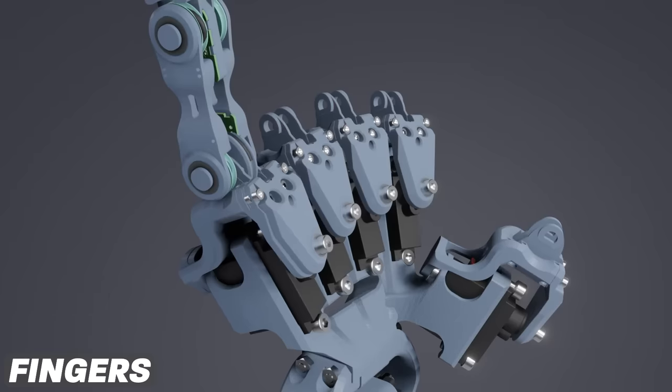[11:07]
This keeps the PCBs aligned, but a big improvement will be to simply add a registration feature between the PCB housing and the structural parts of the phalanges, and then there would be no need for this wire.
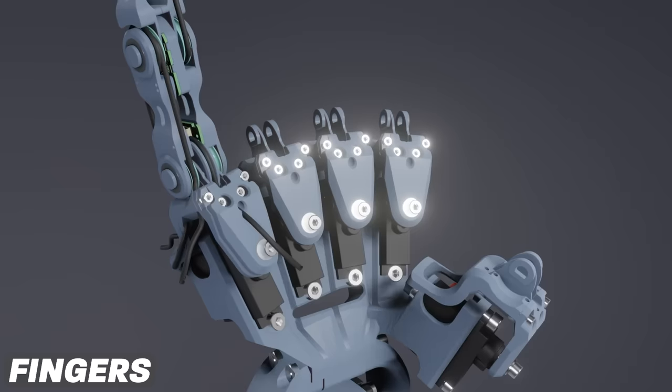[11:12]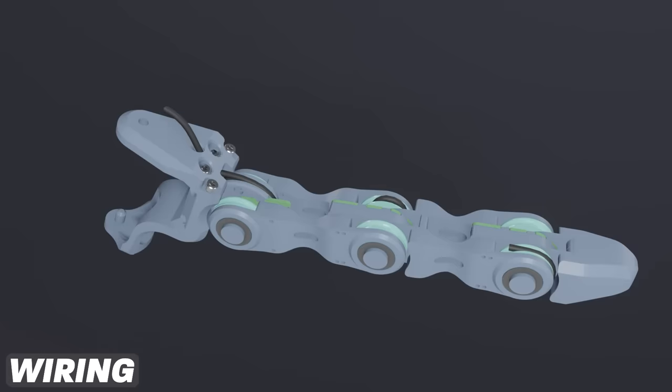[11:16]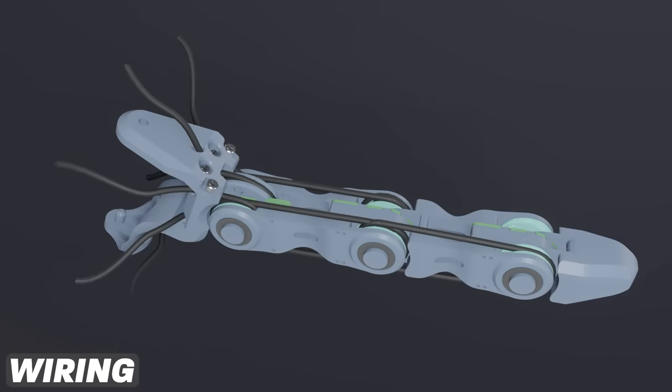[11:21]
Place your phalange onto the palm, and now begins the most fiddly and painful part of the whole build. So now we need to thread the fishing line through all of the pulleys. It can be very awkward, but after doing it a few times, you'll get the hang of it.
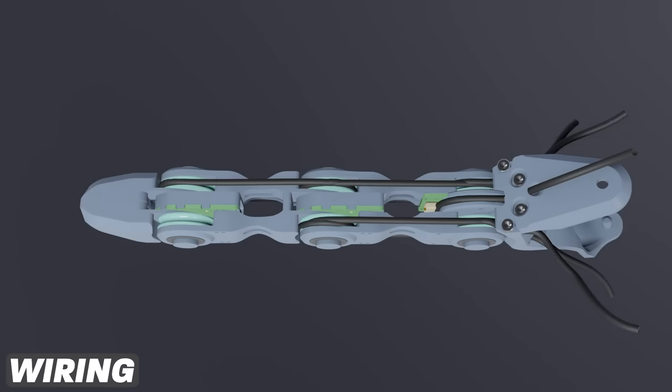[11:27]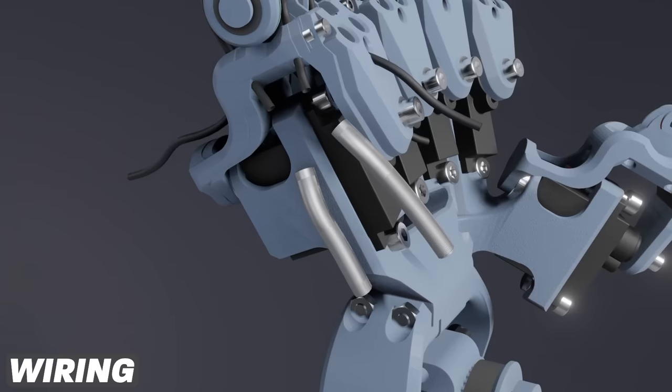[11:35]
Make sure that the cable does one full loop of each pulley, and you may need to use something small like a piece of wire, tweezers, or something else to help you thread the fishing line through. You've got to do this for every pulley in the hand, so it will get a little bit tedious.
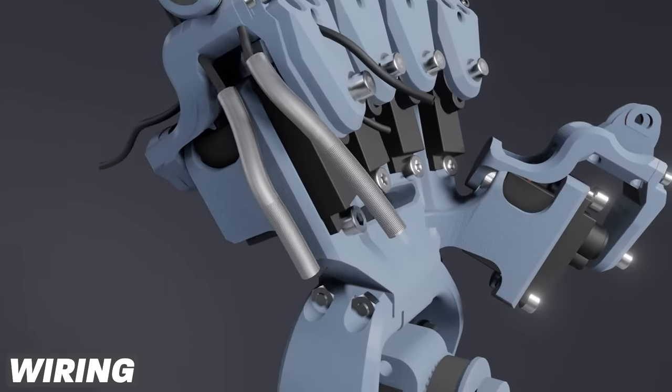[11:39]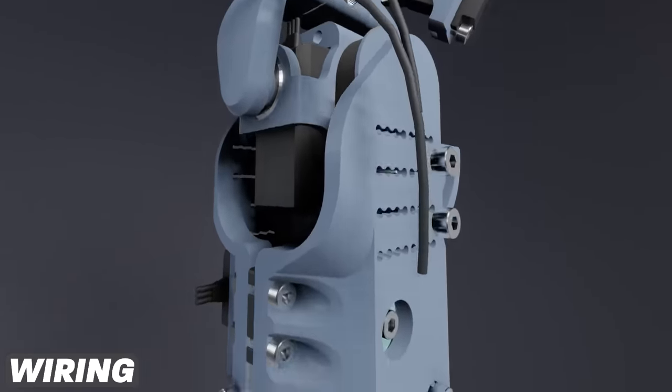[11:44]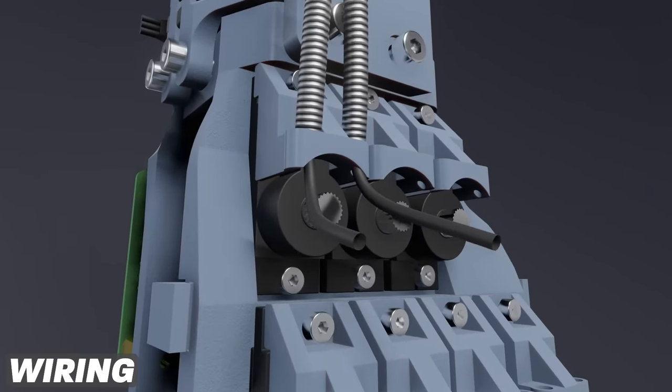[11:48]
Now you can cut a length of extension spring wire housing to sheath the tendon cables. Make sure you cut a long enough length to accommodate the wrist's full range of motion. This can be tricky to get right. Feed the wire through and into the pulley block holes in pairs. Then feed your pairs of wires into the pulleys. I have a specific technique for this.
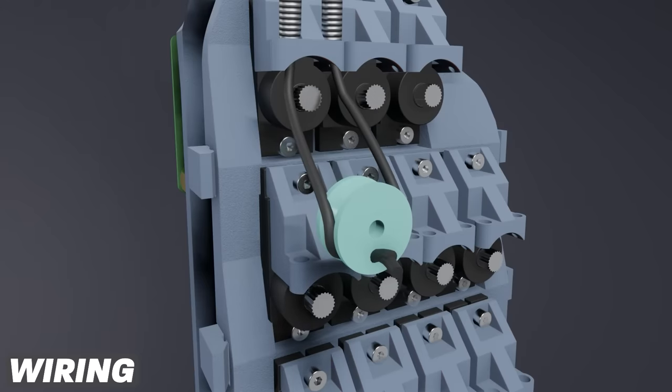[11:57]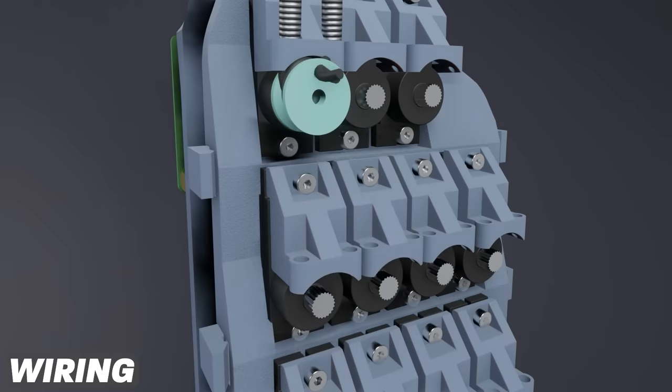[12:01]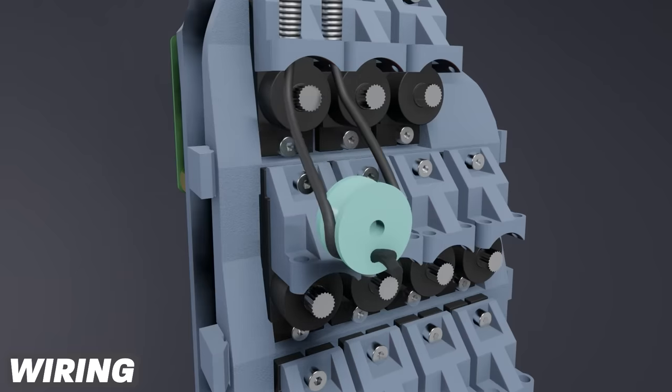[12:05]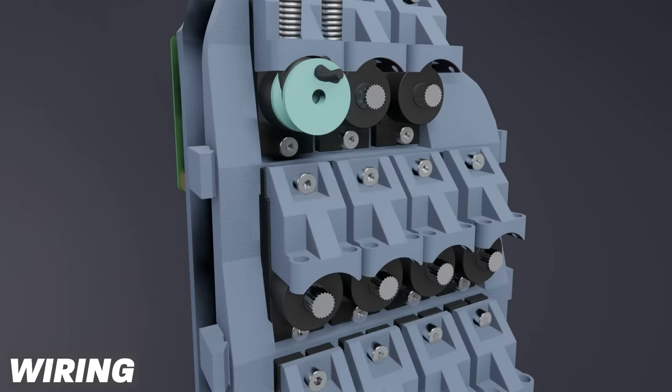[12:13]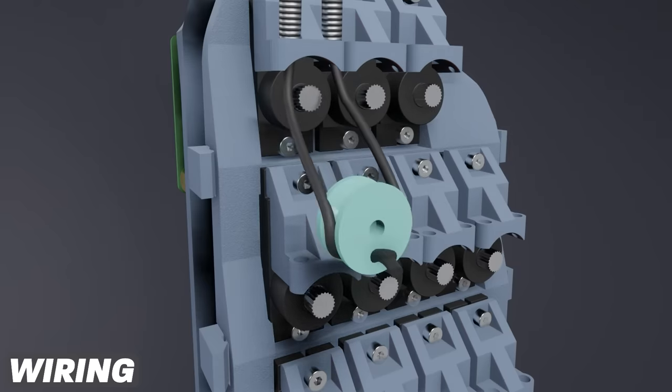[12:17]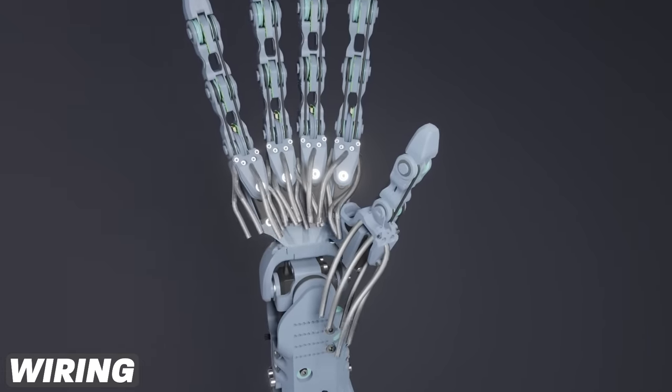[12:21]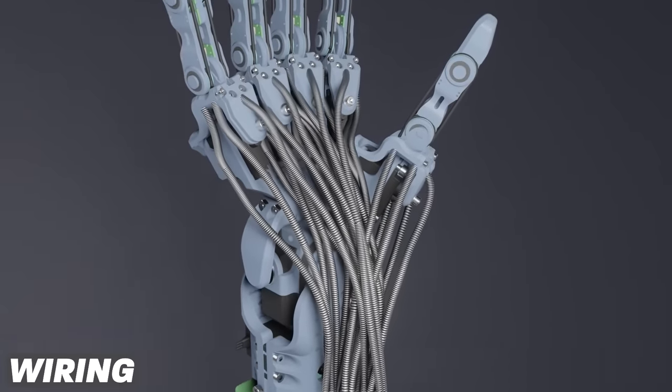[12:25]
Feed it through, rotate 180 degrees around the Z-axis and then 180 degrees around the X-axis. I'd actually recommend doing this twice for two total loops, but it was really hard to animate, so you'll just have to visualize it. Press the pulley onto the servo, it should be tight but not too tight, and pull the cable slack through the hole. Add the M2 servo screw and locking screw, but I would recommend against trimming the cable until you're sure that everything's working. This extra slack makes it so much easier to work with.
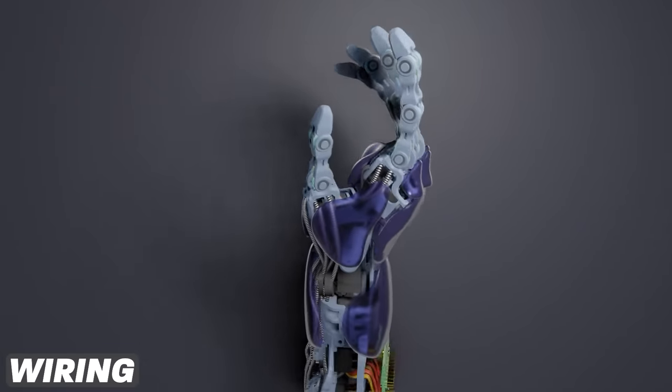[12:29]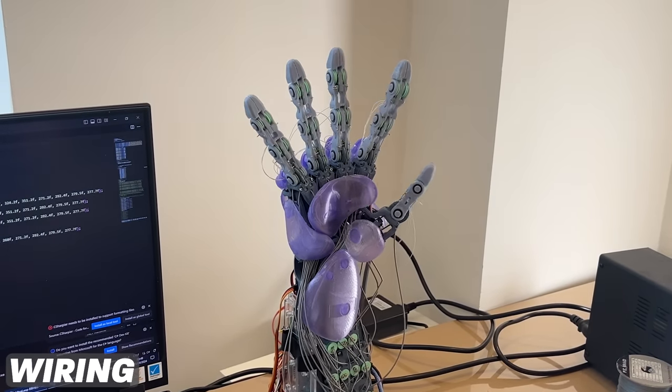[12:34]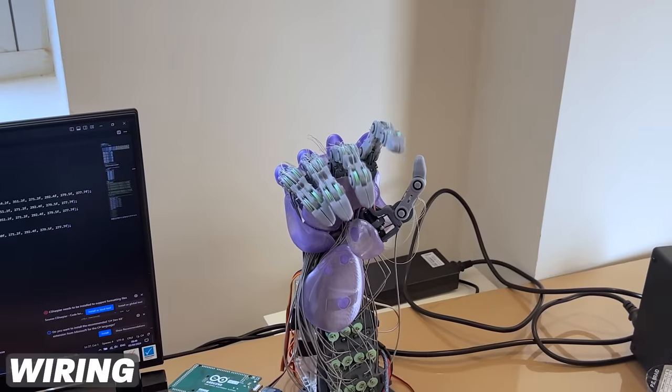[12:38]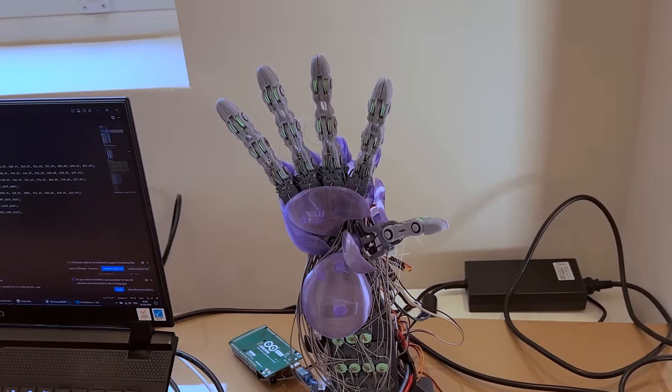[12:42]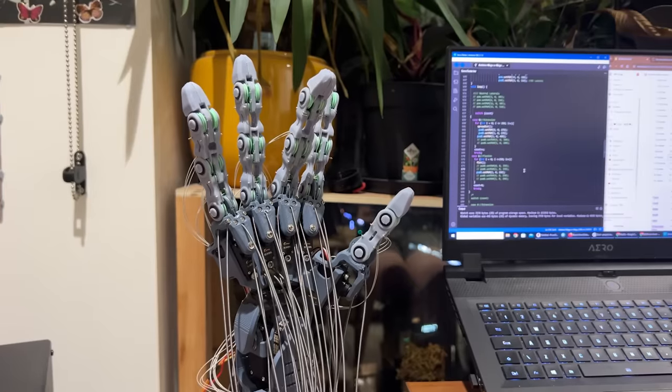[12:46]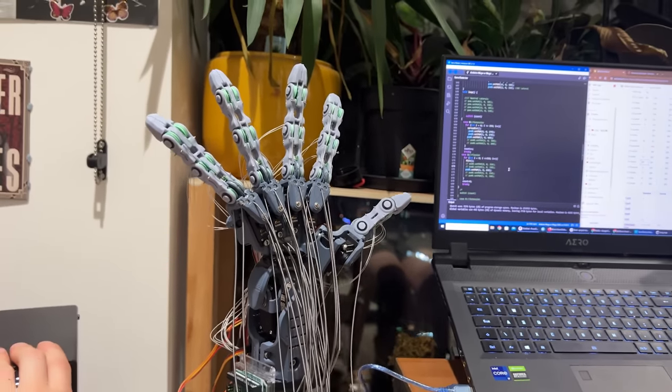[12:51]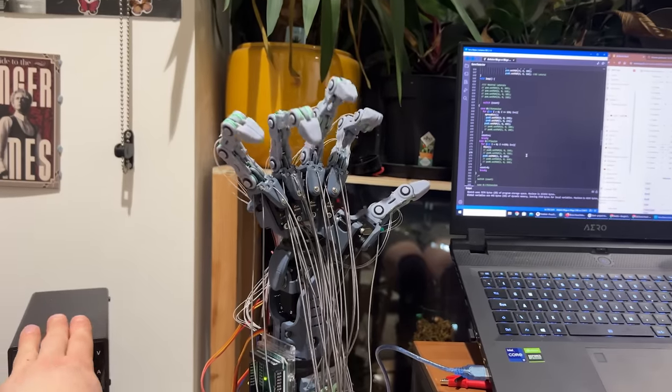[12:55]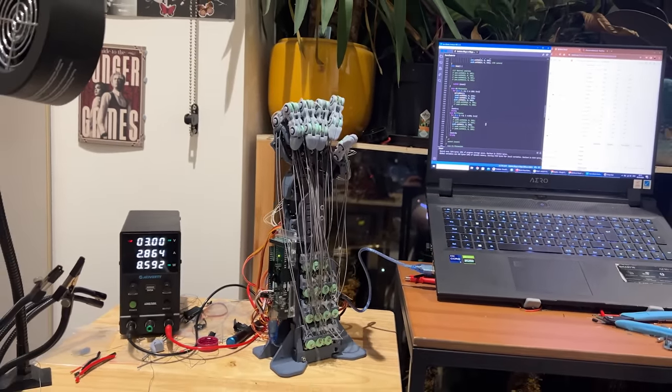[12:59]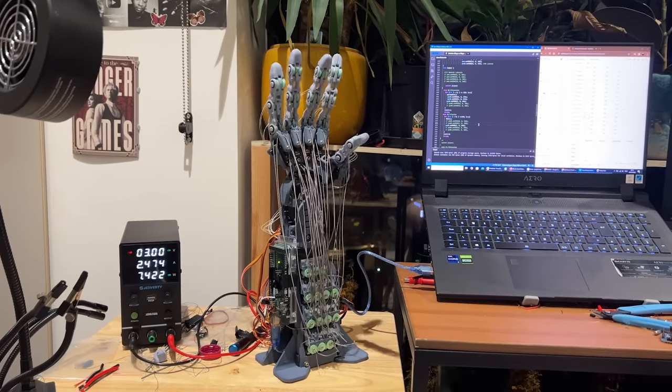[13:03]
Now, mechanically speaking, the hand is essentially finished. On to programming. My control system is very bare bones because I wanted to focus on the mechanical side and not spend too much time with electronics and programming. The most important next step in this project's life right now is to improve the electronics and programming. So I'll show you what I did as a reference point, or if you just want to get things up and running quickly, but I really would recommend you look into a better way to drive the servos.
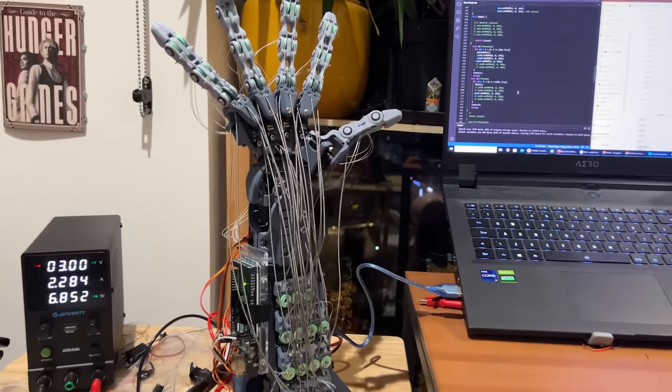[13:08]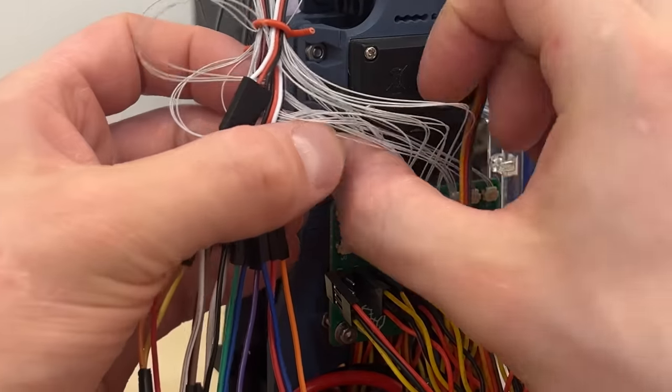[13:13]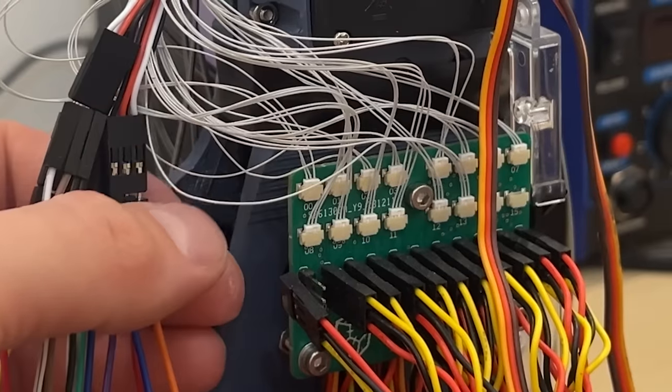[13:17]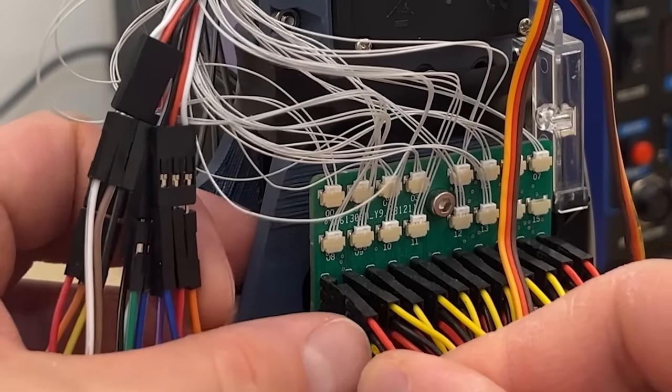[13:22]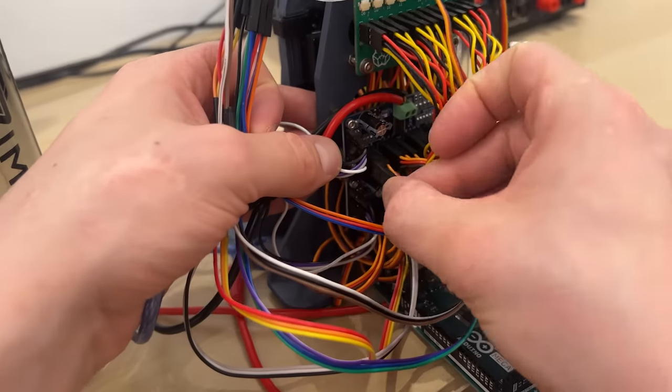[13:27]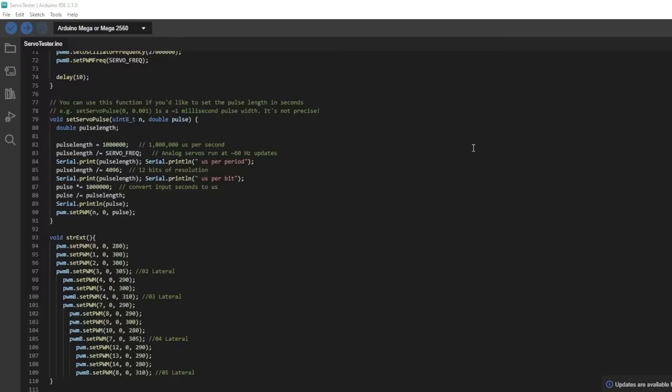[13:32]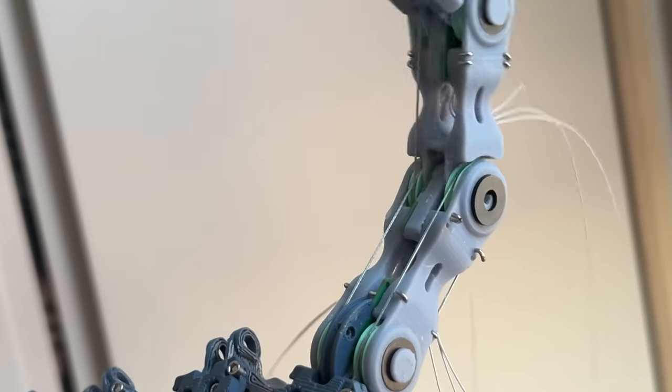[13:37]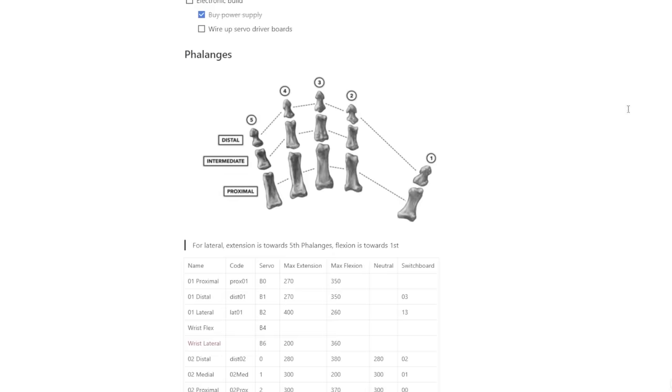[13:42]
My first job was to plug in each joint and find out their limits. So for each servo, you will need to connect the potentiometer wire that you soldered earlier to a connector on the switchboard. You need to find the finger potentiometer that the servo corresponds to and connect its potentiometer cable to the same switchboard number. For that servo, I would then plug it into a port on a PCA9685 servo driver board and use a very simple Arduino program to oscillate between two positions and gradually increase this range to find the limits. I'd also take note of which direction was flexion and which direction was extension.
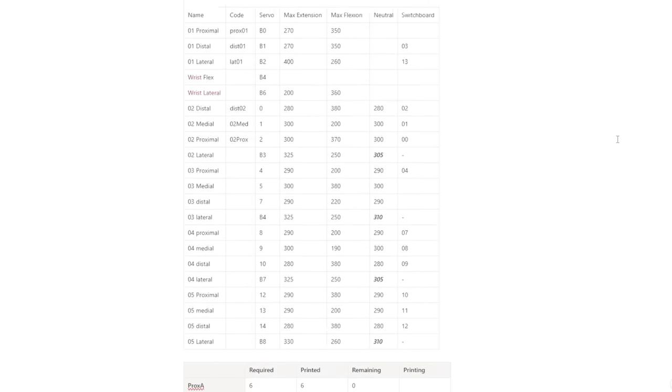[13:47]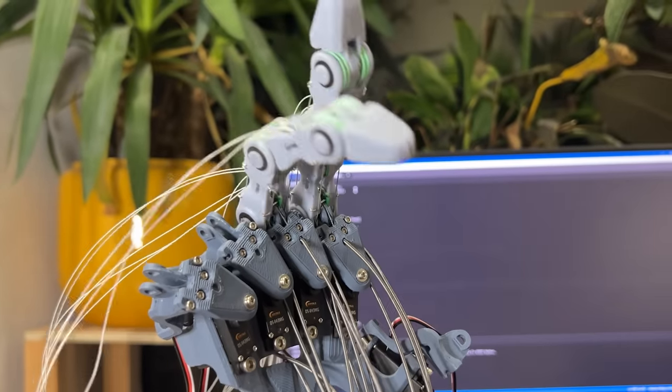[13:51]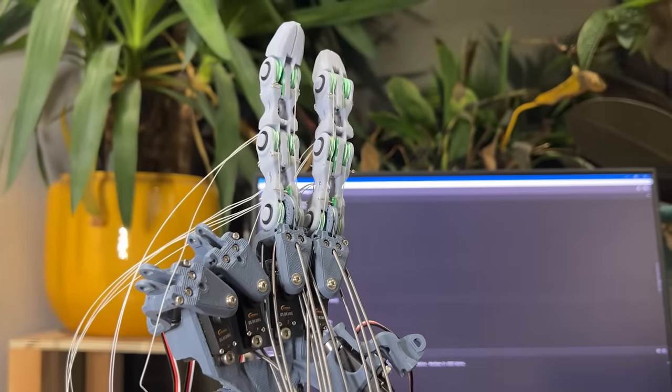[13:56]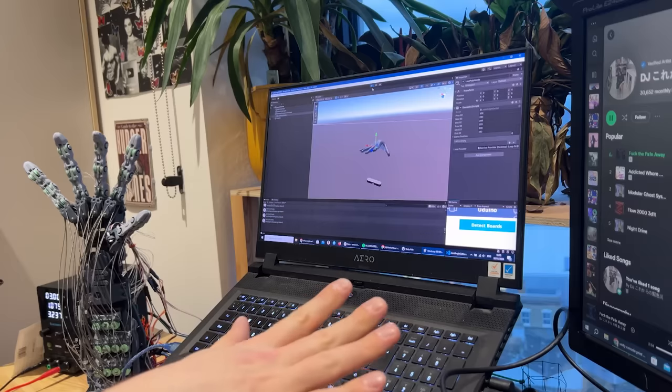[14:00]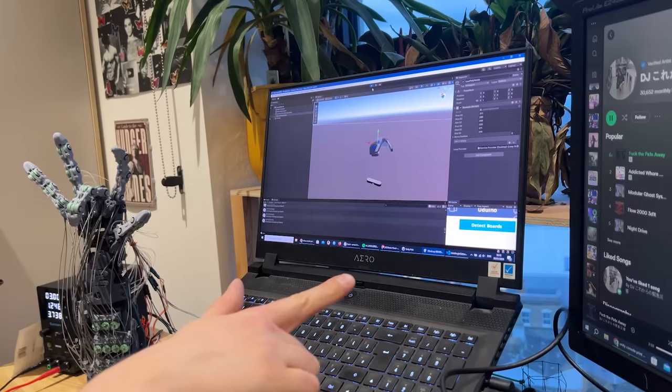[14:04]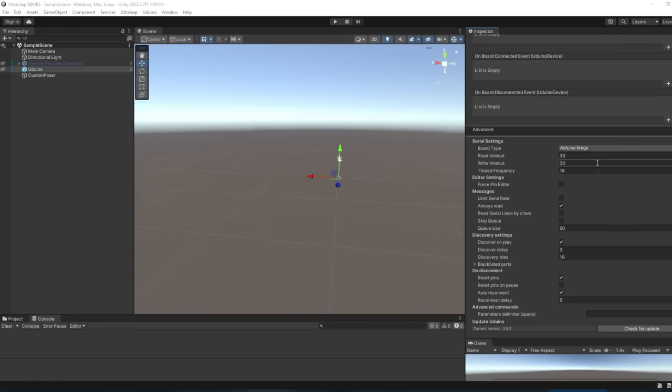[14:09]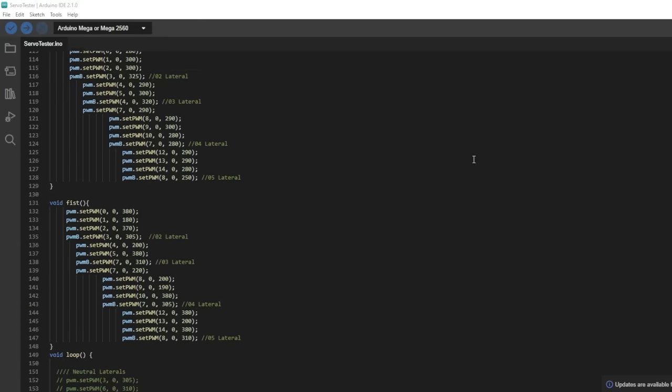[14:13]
I then wrote everything down in this big chart so I know how everything is wired. I found it helpful to drive all of the previously wired servos at once so I knew that they were behaving correctly when working together with other servos. To drive everything, I used a Unity program which uses either a leap motion controller or a simple combination of sliders, and it connects using a paid extension called Uduino. There's some corresponding code that you need to upload to the Arduino, but you should just be able to connect with the Arduino, validate that Uduino has connected, and start controlling the hand.
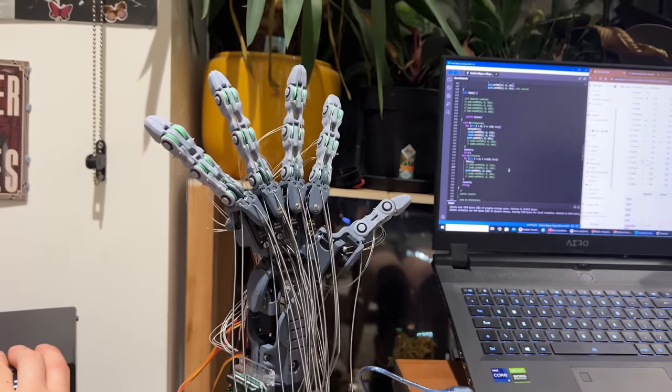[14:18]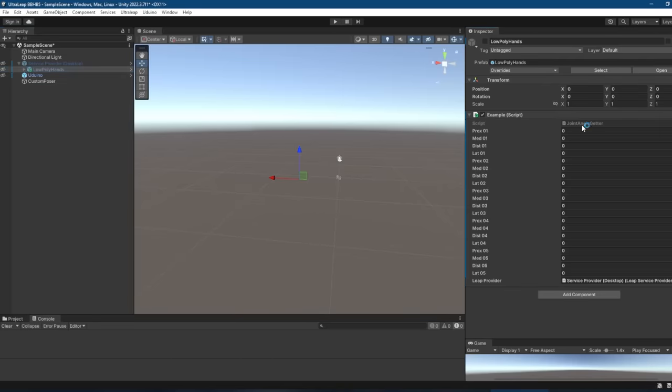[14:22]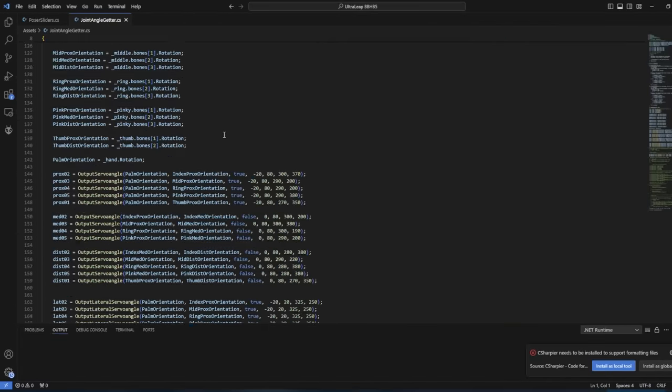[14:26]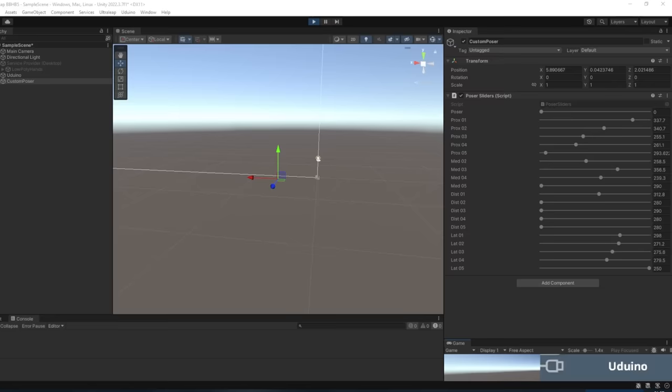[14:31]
Depending on which control method you're using, you'll need to update either the mapping functions in the joint angle getter script for leap motion, or the ranges in the poser slider script. I also added a feature recently where you can move to predefined poses using this poser slider. You can also put this on the timer and cycle through them to animate the hand.
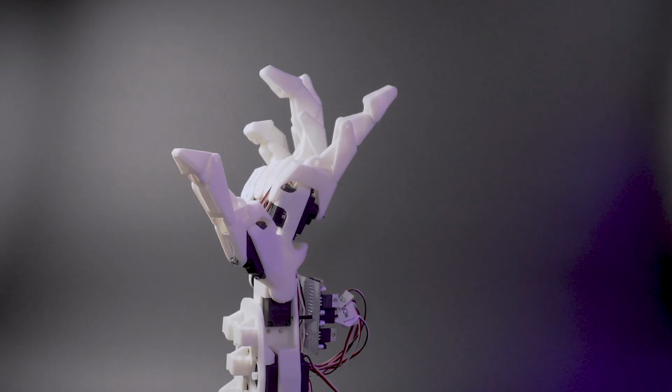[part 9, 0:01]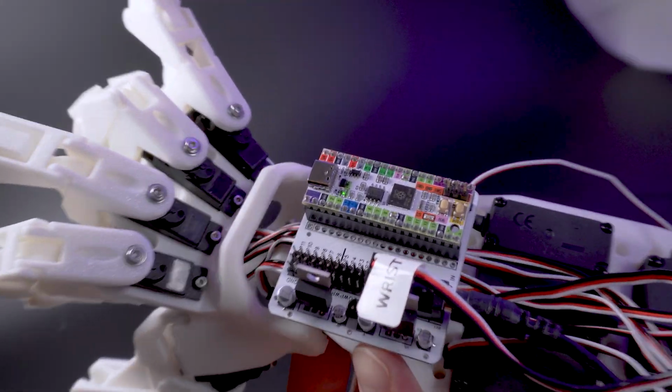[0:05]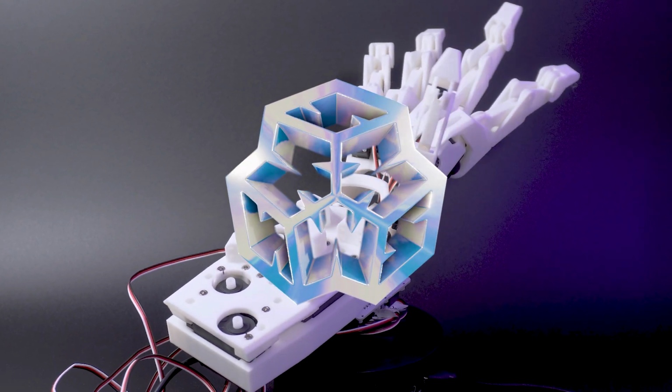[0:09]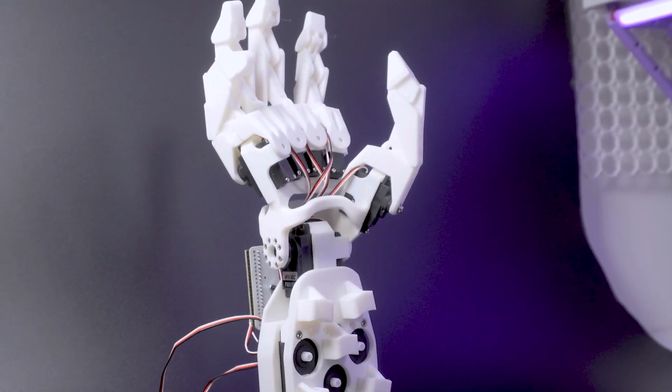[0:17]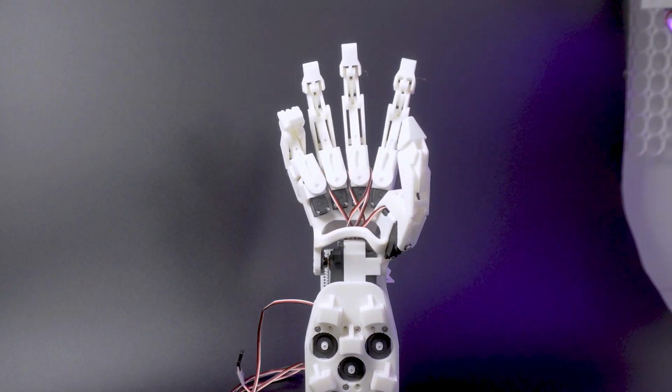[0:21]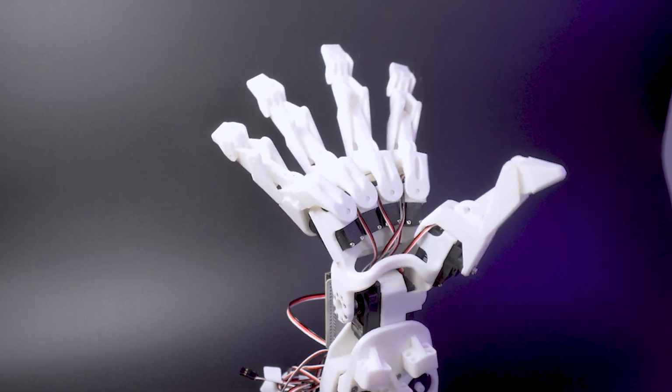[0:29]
Welcome, Cogs. I have designed a brand new bionic hand from scratch, and this time my design has no servo surgery, no resin printing, minimal fasteners, printed parts and off-the-shelf components, yet I've still managed to cram in 11 degrees of freedom and kept the proportions very close to human-sized.
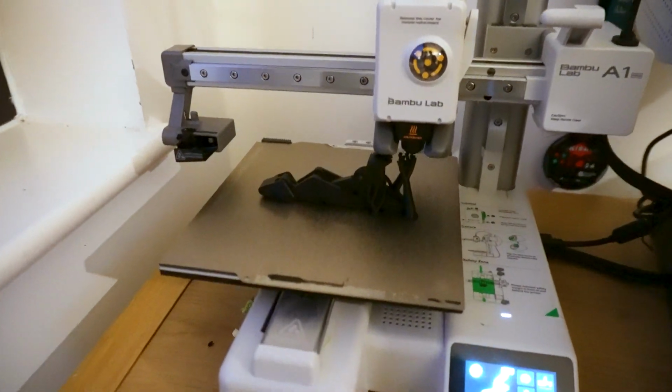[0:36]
This time, I can safely say that this is a robotic hand you can print at home. All the parts can fit on an A1 mini, the entire finger system prints in place as a ready-to-go system of linkages, and there's no crazy soldering wizardry like in previous designs.
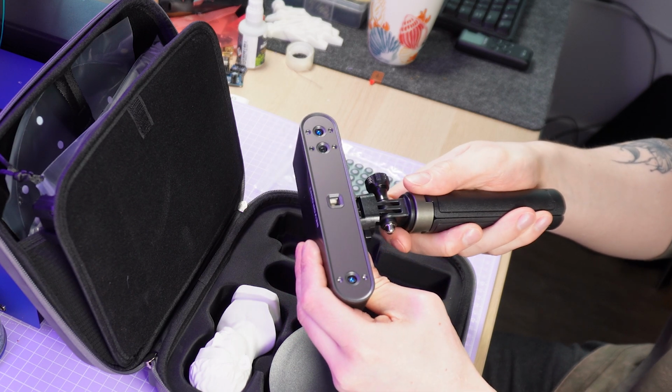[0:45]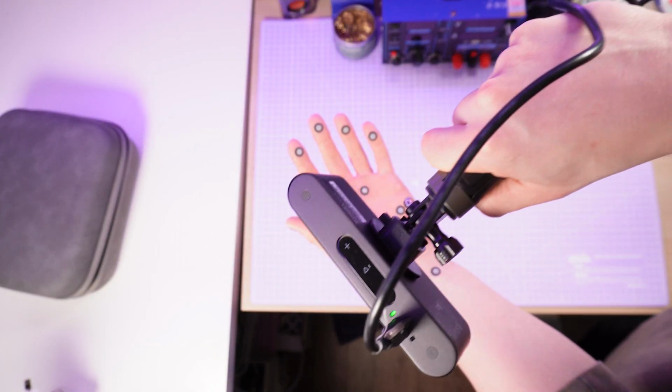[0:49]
In this video, I'll show you how I designed it with the help of the new RevoPoint Pop 3 Plus handheld 3D scanner. But first, I wanted to take a little look back at some of my older designs.
I first got interested in building a bionic hand when I was probably around 17. I can't remember exactly what set it off, but I've had a lifelong interest in the human body, and I think that the hand is, mechanically, probably the most complex and interesting part of it. I made a few different attempts before I started university out of wood, but unfortunately I don't have any pictures of those, but I would lump them together collectively as version alpha.
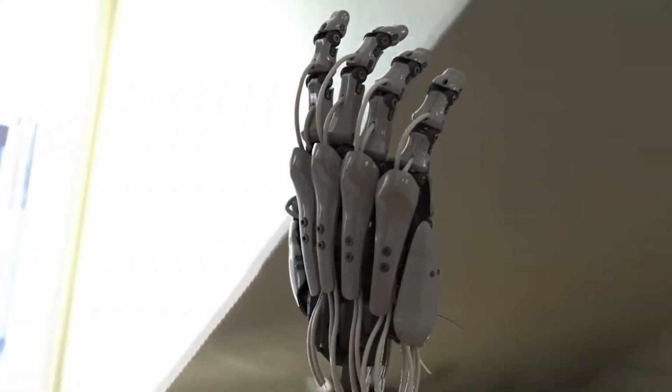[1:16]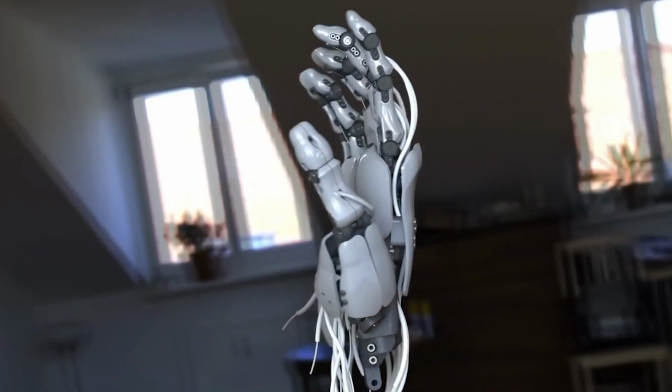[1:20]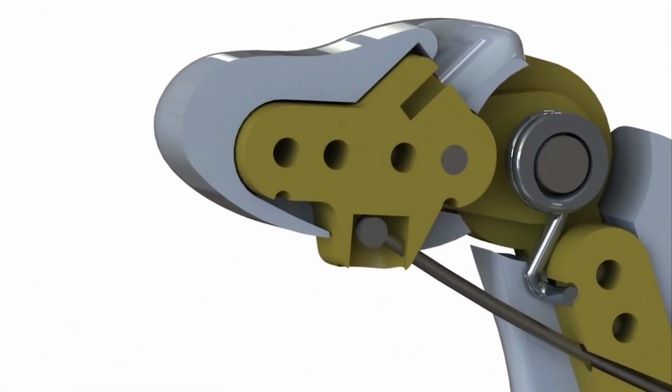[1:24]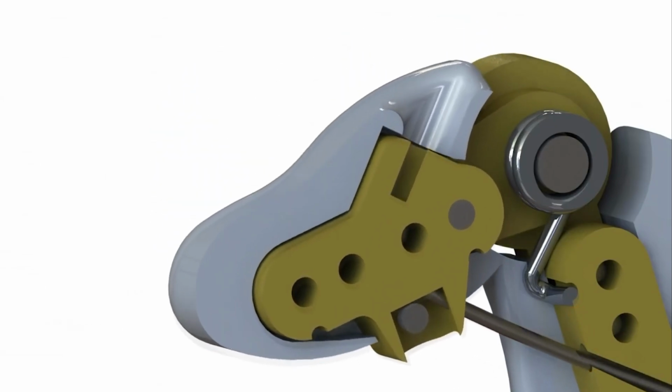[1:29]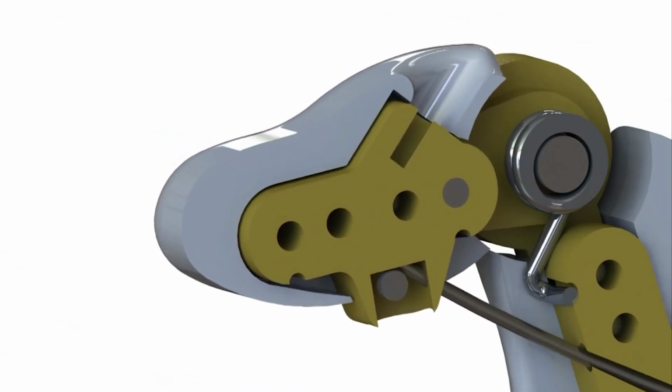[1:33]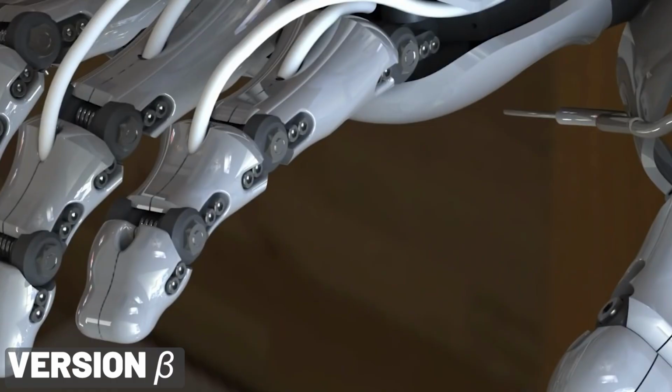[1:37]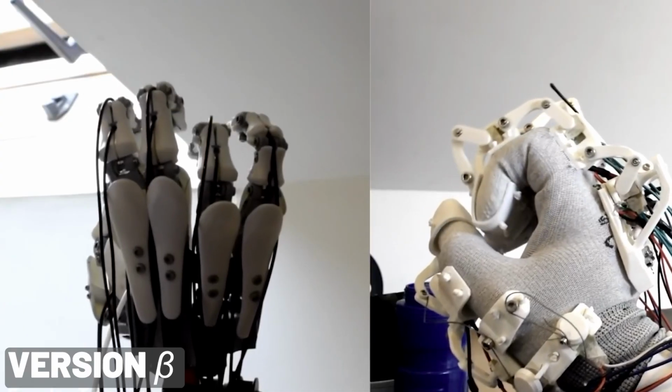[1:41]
Then during university I started a new 3D printed bionic hand which controlled each joint using a tendon system, by which I mean a motor inside the forearm pulled on a piece of string to effectively puppeteer the joints from a distance, allowing me to get a much more complex and dense design while keeping the power of larger motors. This version, version beta, had a spring in every joint and more fasteners than McMaster-Carr, so it weighed too much and it really didn't move that well, but I did build and test a final version.
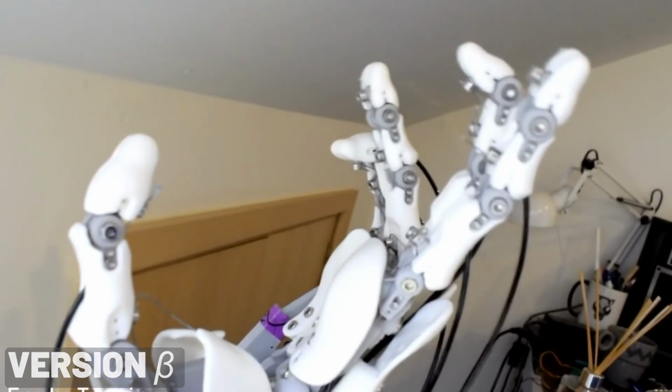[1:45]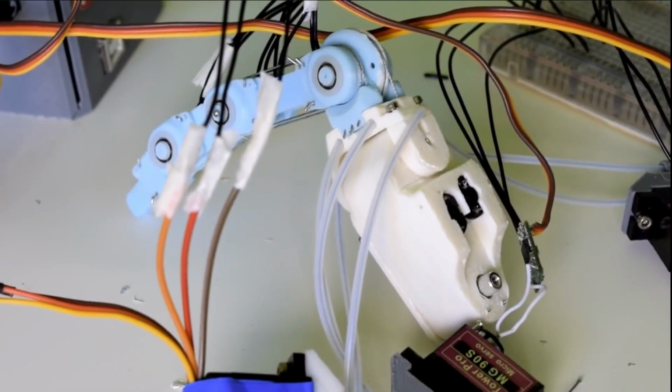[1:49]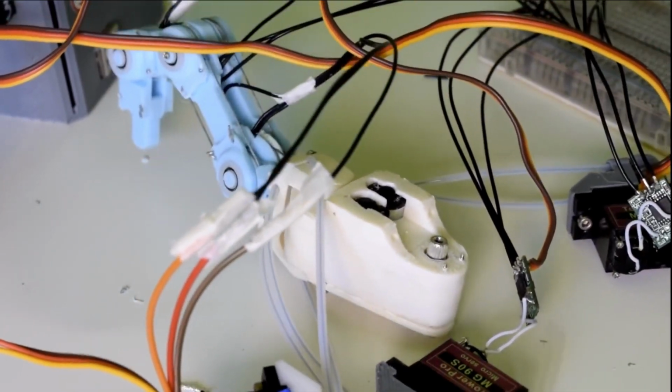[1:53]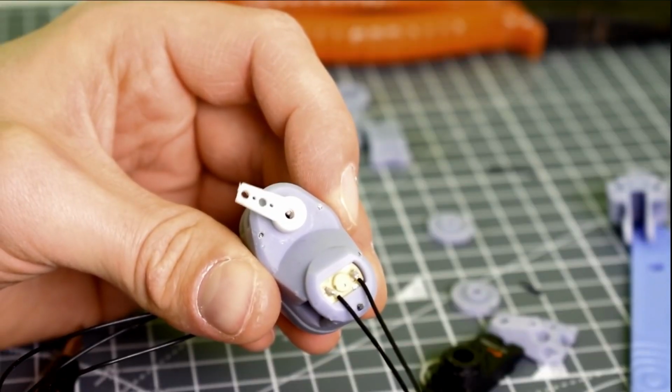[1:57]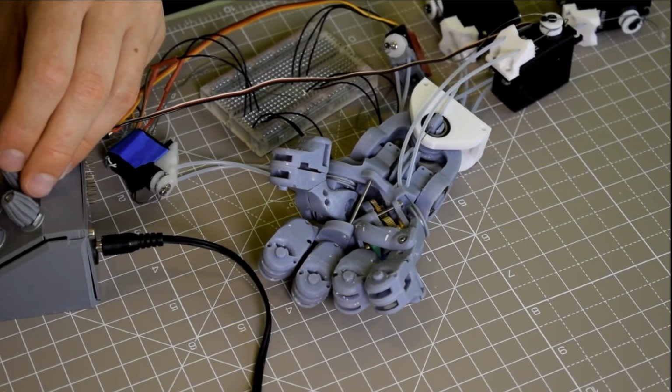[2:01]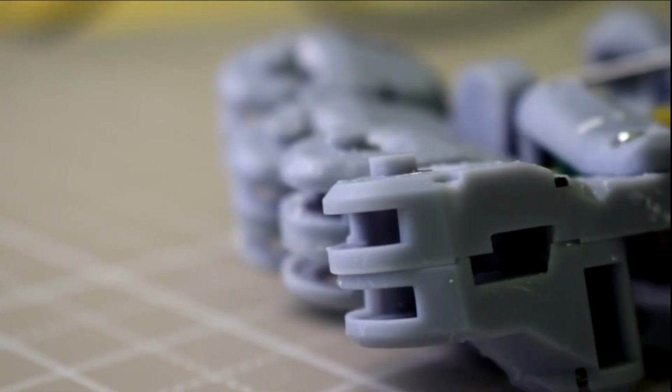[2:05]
I picked the project back up around 2020 and totally redesigned from scratch, with positional servos in the joints themselves, a much more lightweight design approach and more complex parts printed in resin. I designed and printed my own servos just to fit within the shape that I wanted, and I even had actuators for the metacarpal bones beneath the fingers, meaning the shape of the palm could change and subtly alter the orientation of the ring and little fingers.
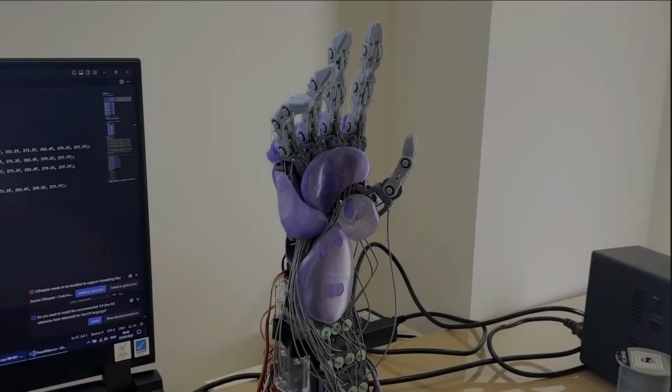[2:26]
This design, version Gamma, was extremely cool, but I think it was just too ambitious for that stage in my life given my skill level and other commitments at the time, and so I never actually finished a full working prototype. I had a break between the end of 2020 and 2023, and then worked on it very on and off until I finally finished a working prototype at the start of 2024.
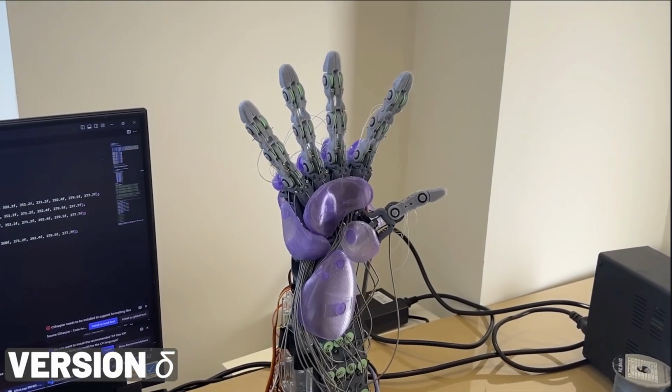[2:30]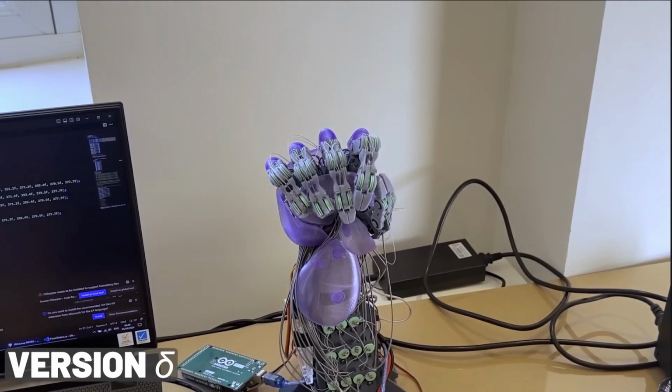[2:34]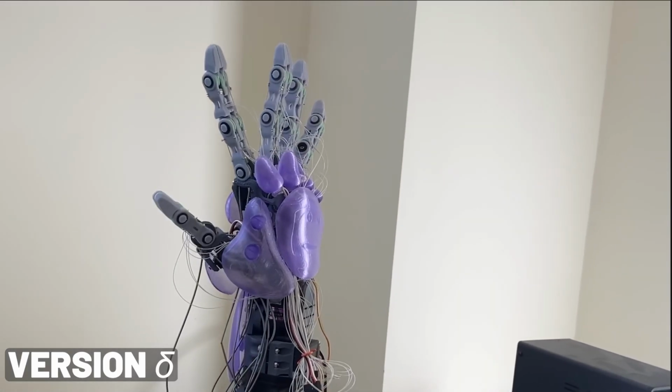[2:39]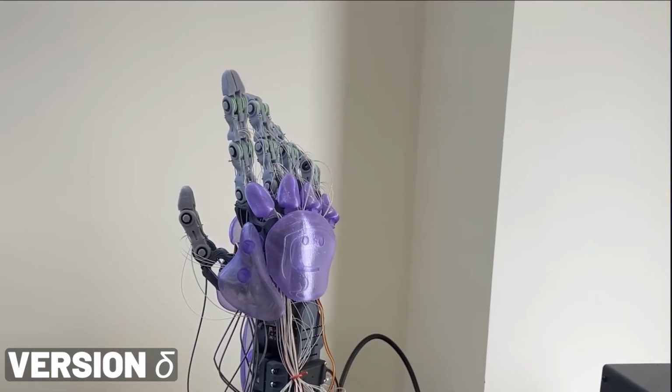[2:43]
Version Delta was heavily based on Gamma, but I stripped back a lot of the cooler, more ambitious features. I switched from my homemade palm servos to off-the-shelf ones, I made the palm static instead of actuated, and I simplified the thumb's motion too. The prototype worked, but at what cost?
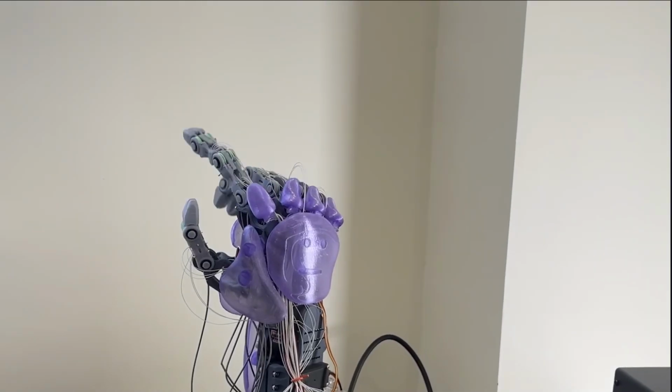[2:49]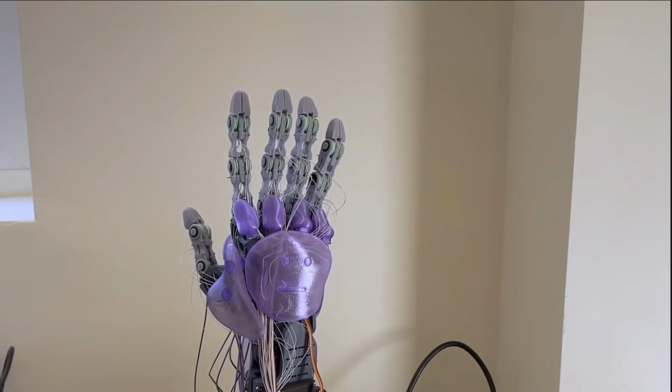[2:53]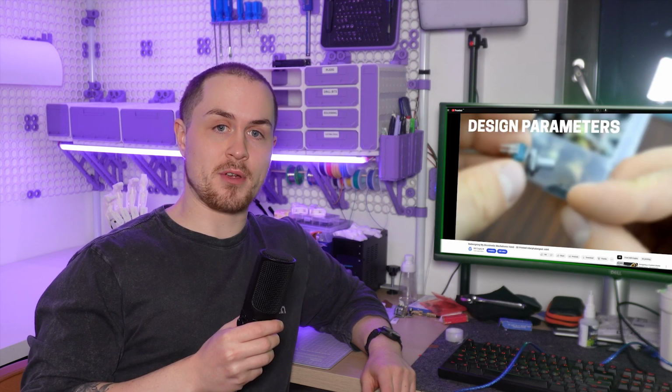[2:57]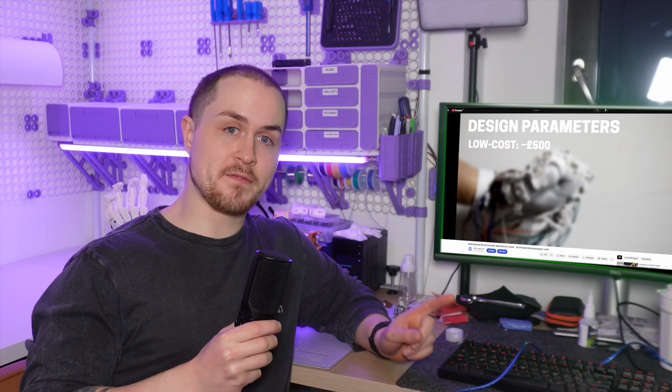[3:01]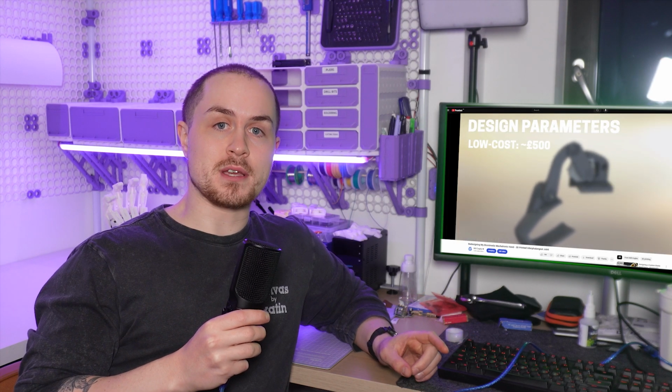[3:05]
I couldn't shake the feeling that version Delta doesn't really achieve the requirements I set out, and the even worse problem was that my requirements actually aren't very clear at all. Back in 2020, when I still had a Yorkshire accent, I laid out all of my requirements in this video. The main thing that I stressed was that I wanted it to be affordable and easily accessible, so that people could make their own. I would argue that version Delta is too hard to build.
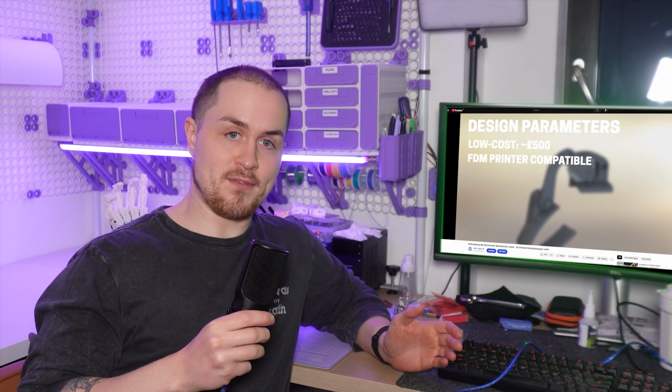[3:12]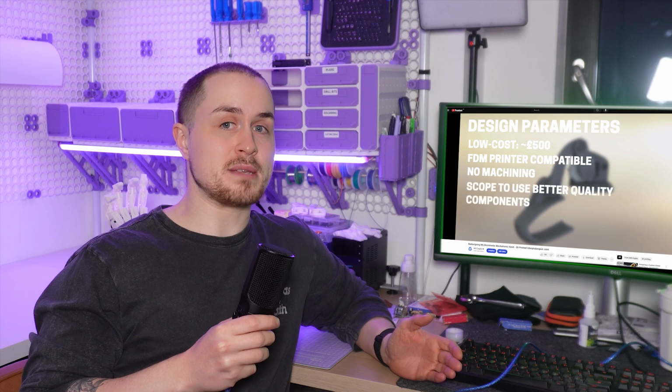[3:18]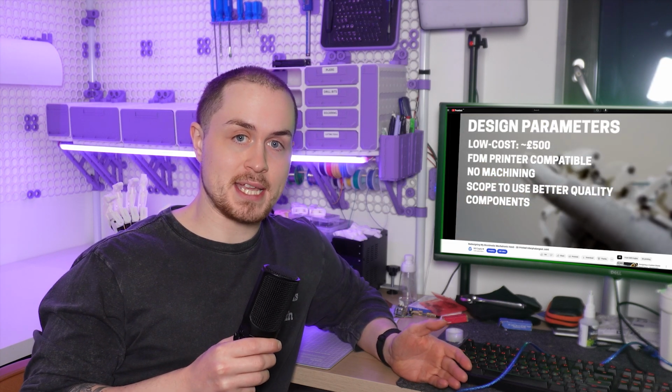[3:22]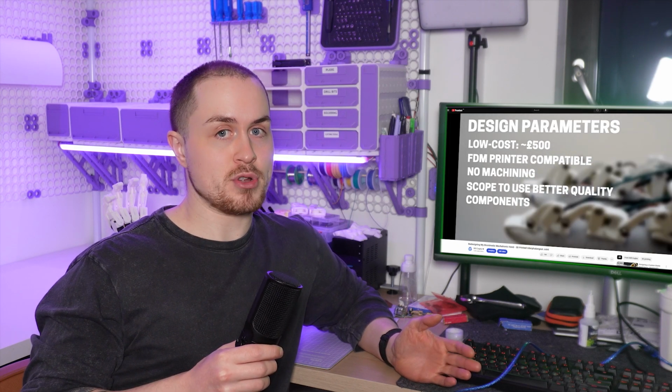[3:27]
My new philosophy going forward is not to try and do everything at once. If my goal is for a design to be accessible to the general 3D printer owning public, then it should actually be easy to build and cheap, whereas if I want a design to be highly biomimetic, tackling movements and ranges of motion not yet explored, then maybe that should be a separate design which might be a little bit more expensive and tricky to build. That brings us to version Epsilon.
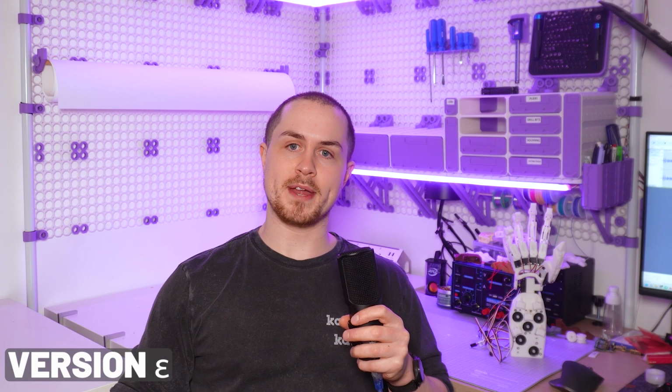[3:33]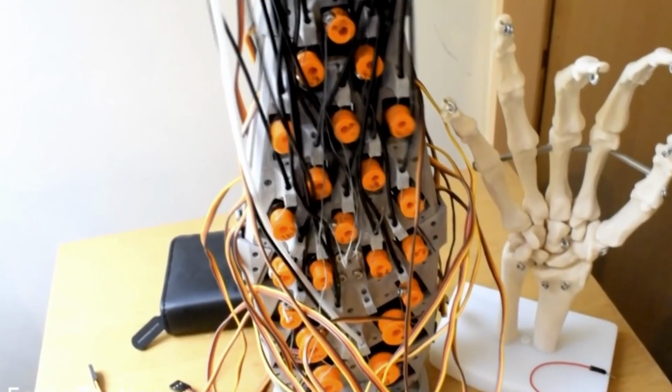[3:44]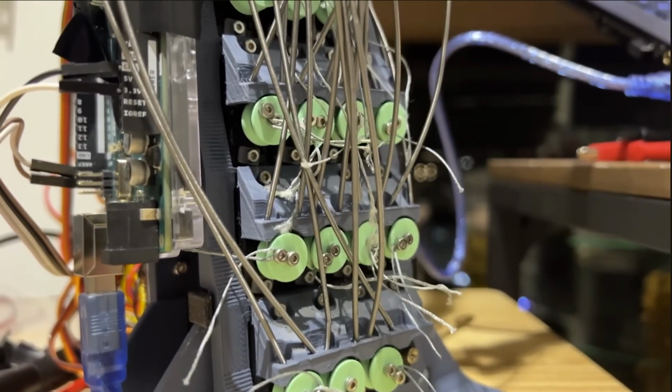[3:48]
The number one requirement is that it's pretty easy to make, and the number two requirement is that it's not too expensive. In terms of mechanical function, the biggest obstacle to making any of my hand's designs achievable for the average hobbyist is the massive amount of actuators, joints, servos, sensors and wires.
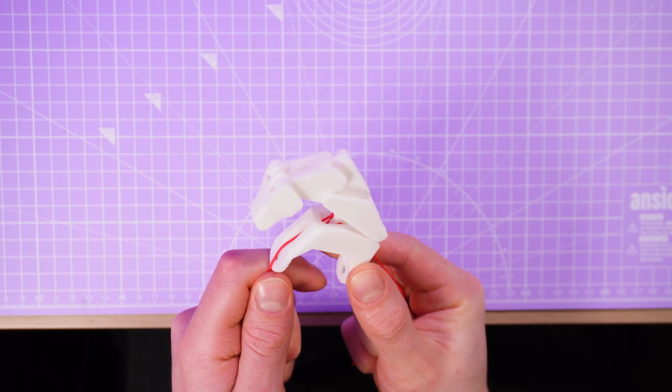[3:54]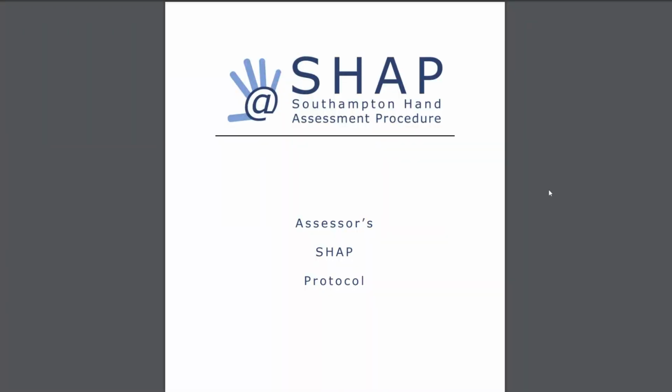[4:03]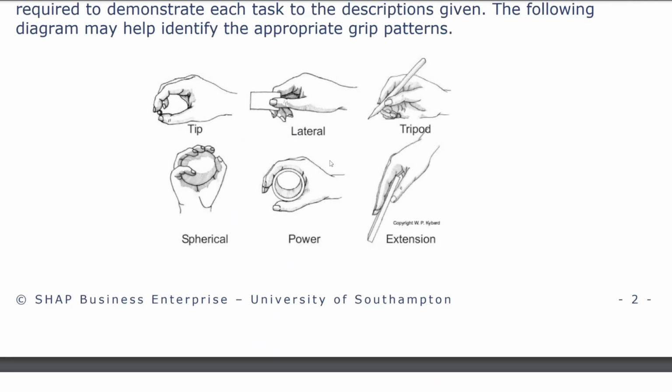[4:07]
So I decided to simplify the mechanical action of the fingers to be driven by only a single actuator. This will mean that there are some objects I can't grasp, but another requirement is that I still want Epsilon to be able to perform some different grip types, namely the 6 different types outlined in the Southampton hand assessment procedure. Finally, it needs to be shaped like a hand, by which I mean it should be roughly the same size and shape as a human hand, with similar relationships between finger lengths, etc.
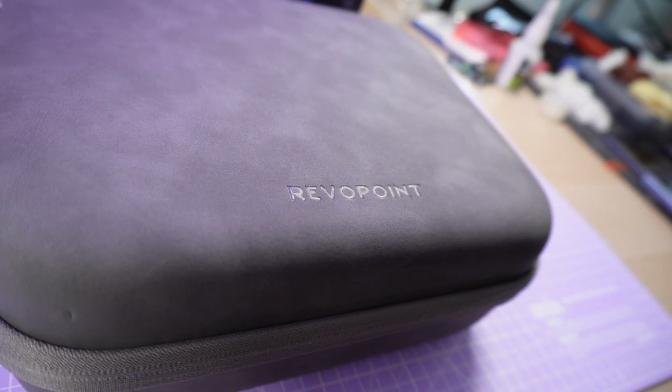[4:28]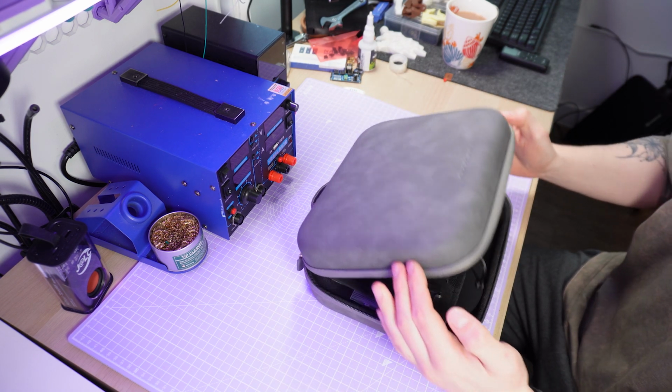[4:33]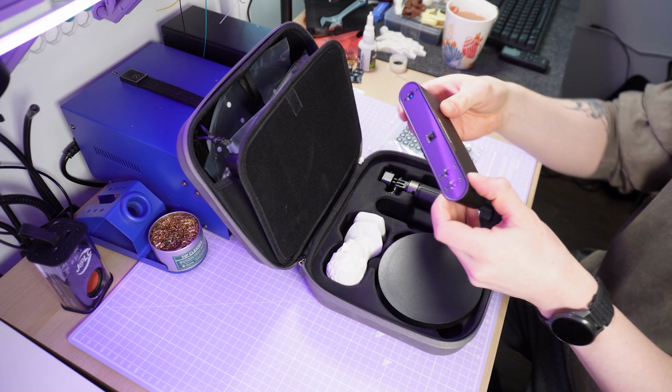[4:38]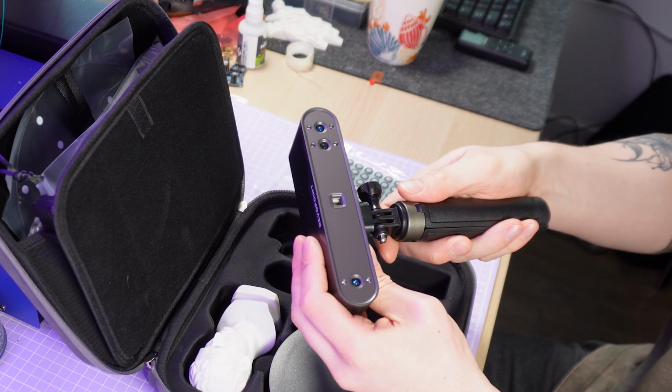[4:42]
There's a lot of scientific data and research on this type of thing, but there are a lot of details that unfortunately just aren't mathematically defined yet. Until now, it's been pretty much just guesswork for me, but this time I used RevoPoint's new POP 3 Plus 3D scanner, a handheld structured infrared light scanner that's designed for capturing medium to large sized objects, like faces, engine parts, and in my case, my own hand. It's portable, easy to set up, and incredibly precise, 30% more so than RevoPoint's previous version, and perfect for creating a benchmark for improving the proportions and realism of my designs.
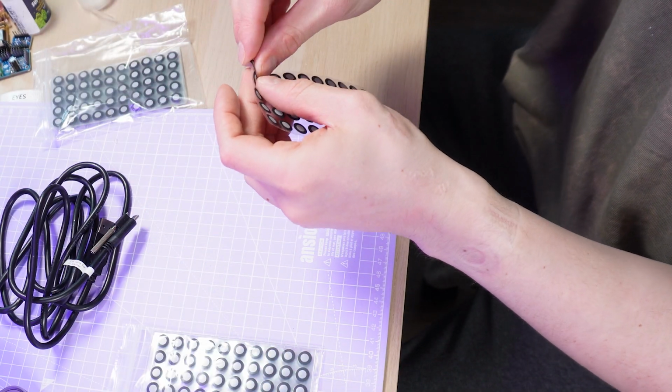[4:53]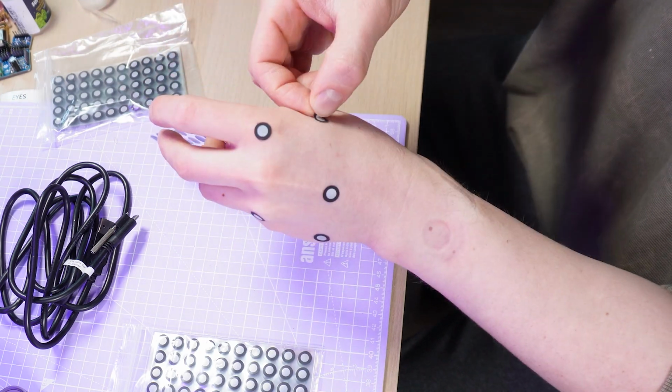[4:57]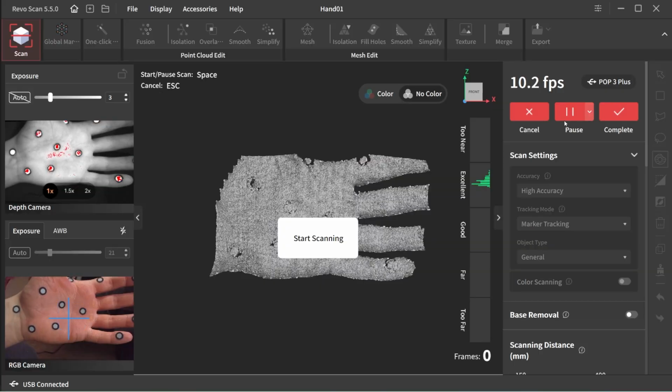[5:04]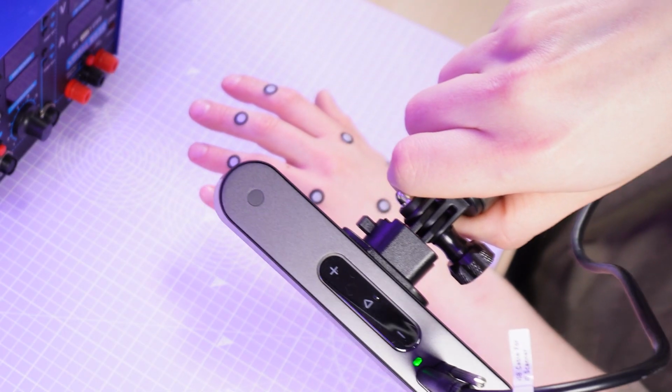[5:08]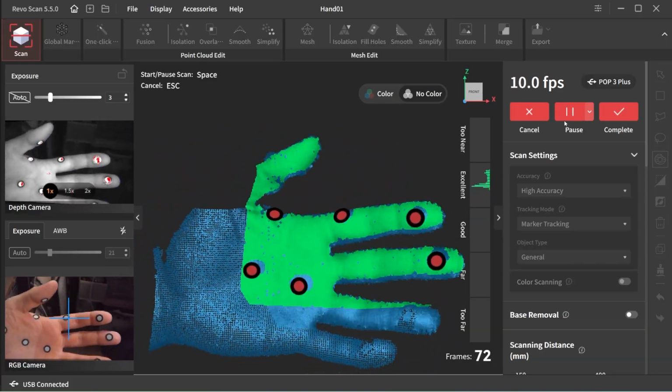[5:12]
The first step was to use these reflective stickers, called global markers, to create essentially anchors which help the scanner to keep track of the object as I moved around it. It was quick and easy to get going. I connected the scanner to my laptop, opened RevoScan 5, and started scanning. The hardest part was probably just keeping my hand still as I moved around and scanned, but RevoPoint's software makes it easy to ensure I had the right distance as I went along.
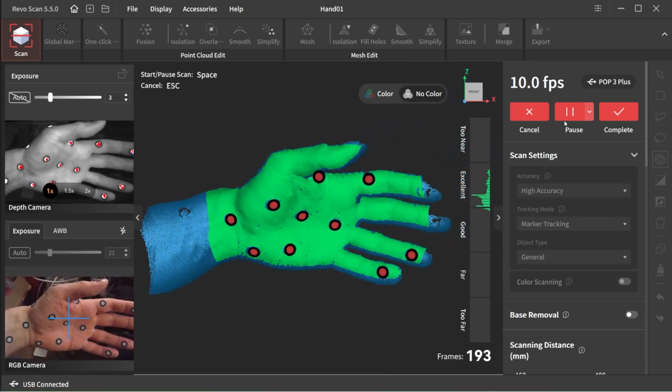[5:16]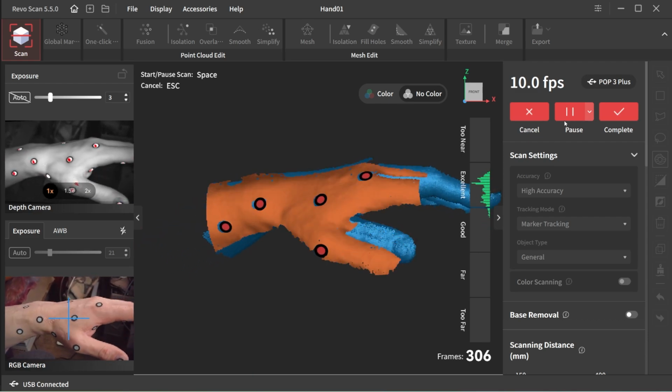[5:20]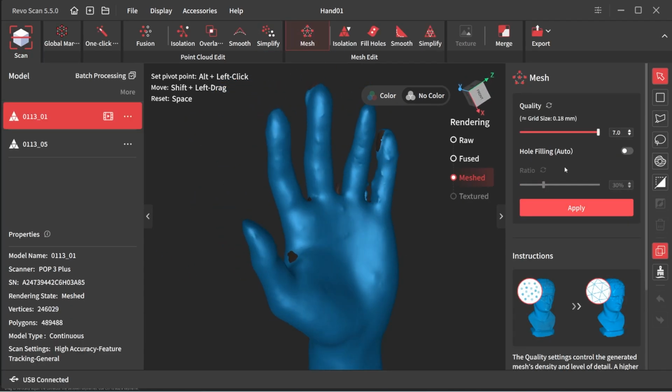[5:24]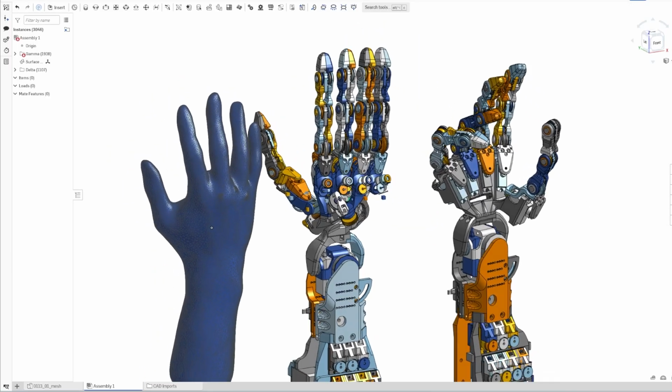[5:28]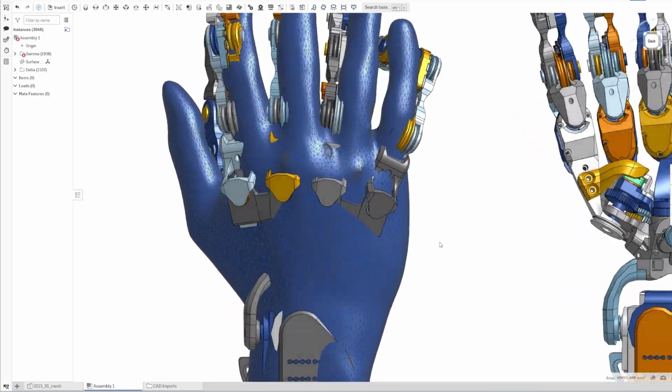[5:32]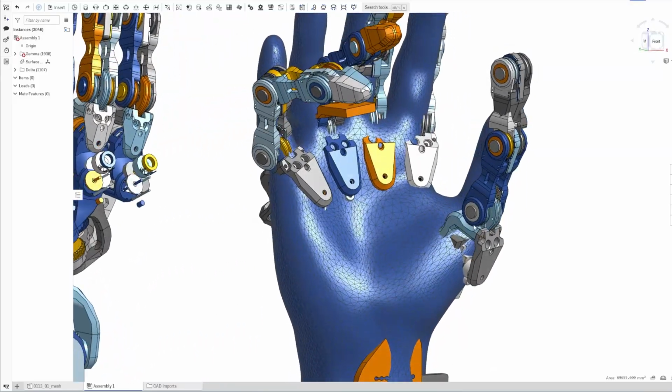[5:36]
There are lots of post-processing tools inside the software, so for my purposes I wanted a clean, low resolution but dimensionally accurate mesh, and I still needed to be able to pick out important details like where the knuckles and finger joints were. Importing into CAD, I could see for the first time how my design stacked up against real-world anatomy. Later, I'll show you how I used this scan as a basis for designing the palm of my newest Epsilon hand by referencing the orientation and spacing of the knuckles in this scan.
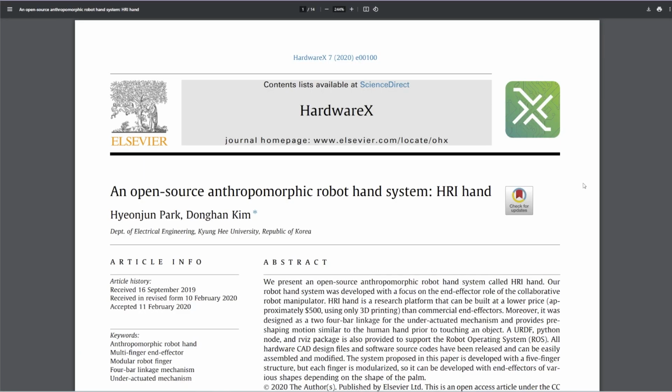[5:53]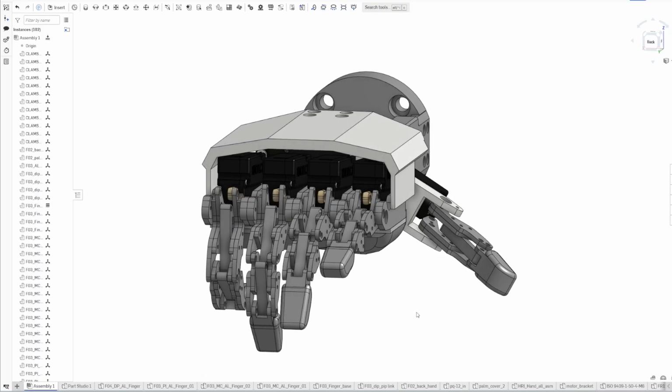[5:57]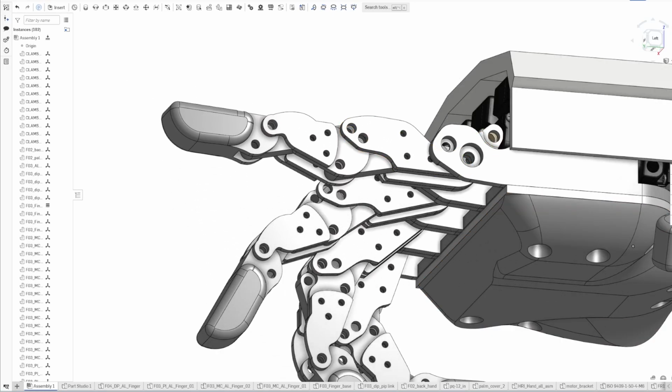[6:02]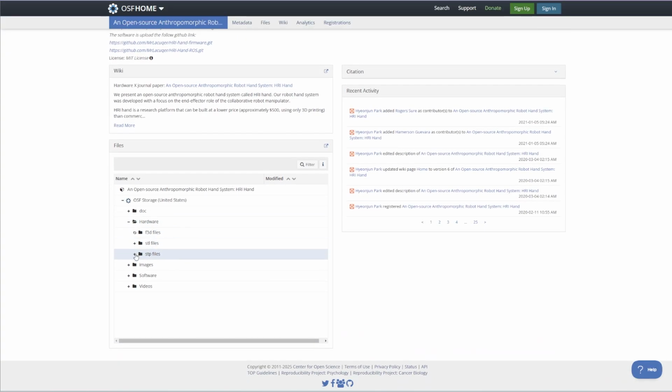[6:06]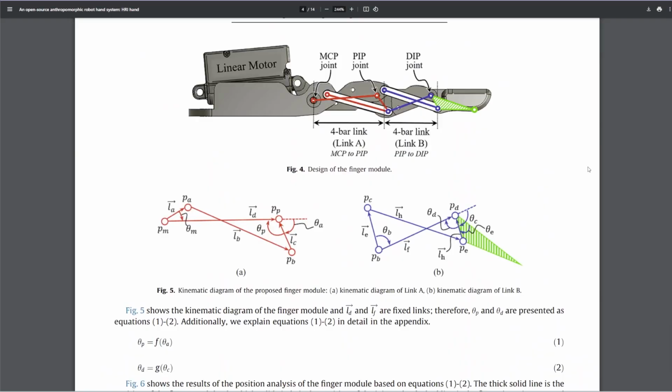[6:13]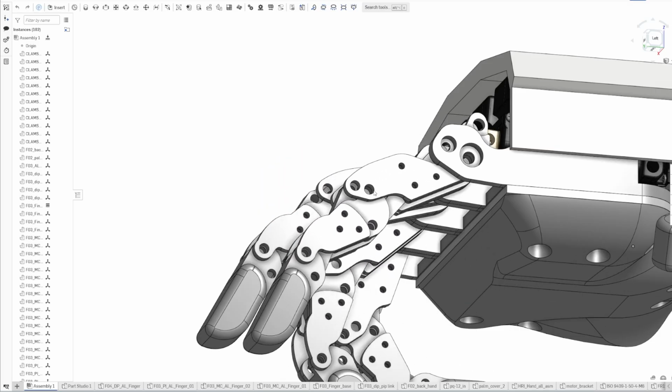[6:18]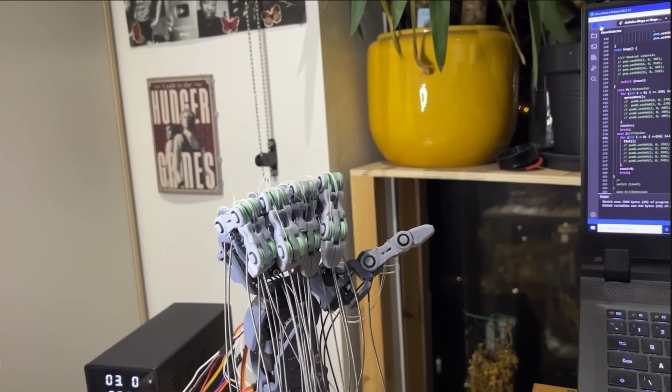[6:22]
So the design of the fingers is pretty heavily based around a research project called HRI Hand, which is an open source anthropomorphic robot hand system. There are other designs out there which use a similar linkage system, but I wanted to call out this one in particular because I really appreciate how they made everything open source and it's all online and easy to access. In the paper, Hyunjun Park and friends describe a system of linkages to drive three finger segments along a particular trajectory using only one mechanical input, i.e. motor, whereas all of my previous designs have used separate motors for each joint along the finger.
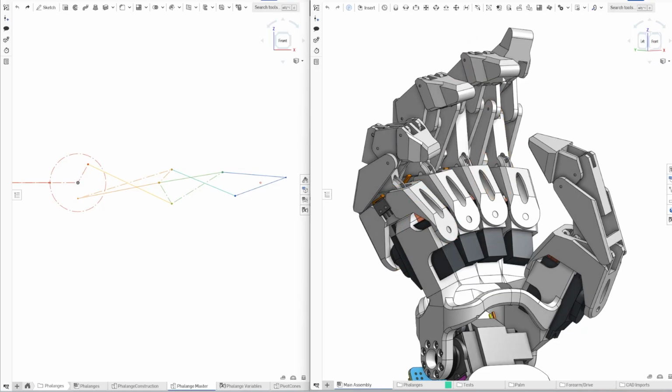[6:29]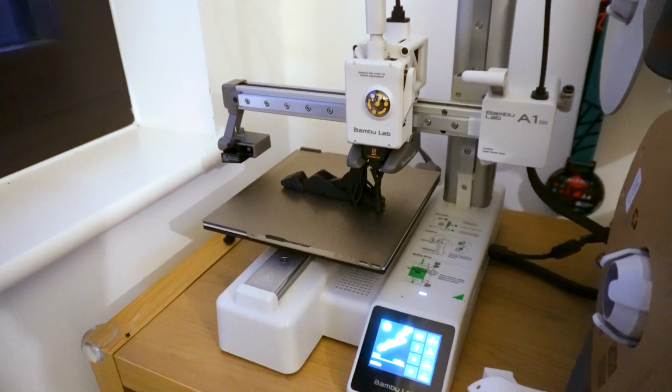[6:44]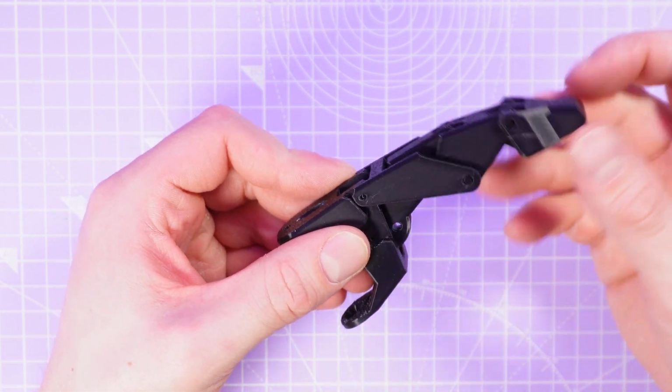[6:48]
I wanted to build on their work in a few ways. Firstly, I wanted to make a parameterized CAD model so that I could generate different fingers in the hand at different lengths, and also to have a blueprint which I could use to make changes to the angles and proportions of the framework and see how those changes alter the trajectory of the resulting fingers. Finally, I wanted to design a finger which could be printed entirely in place and pre-assembled, meaning it's ready to go straight off the print bed.
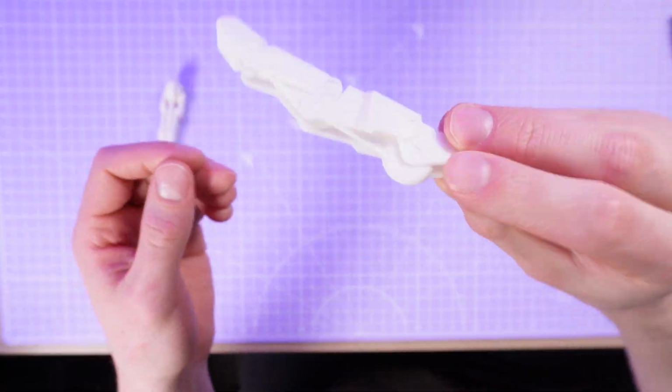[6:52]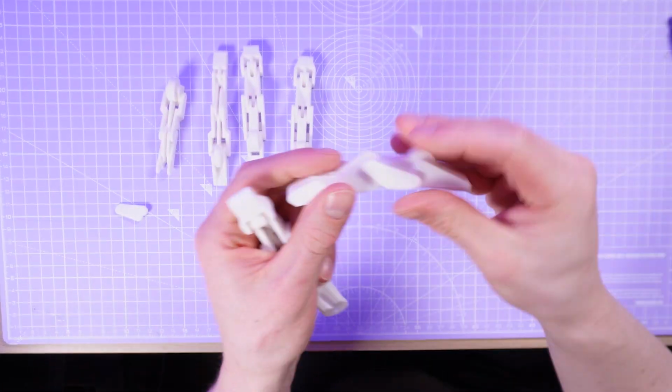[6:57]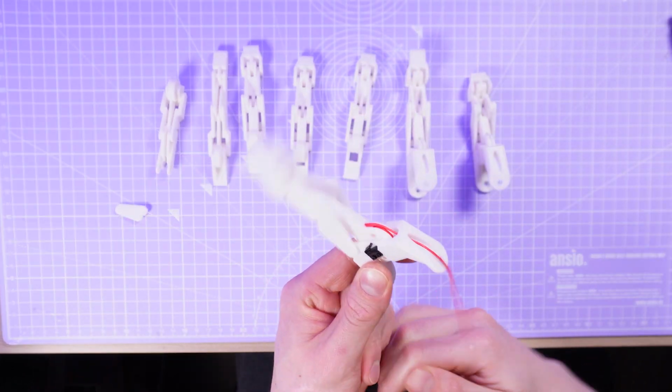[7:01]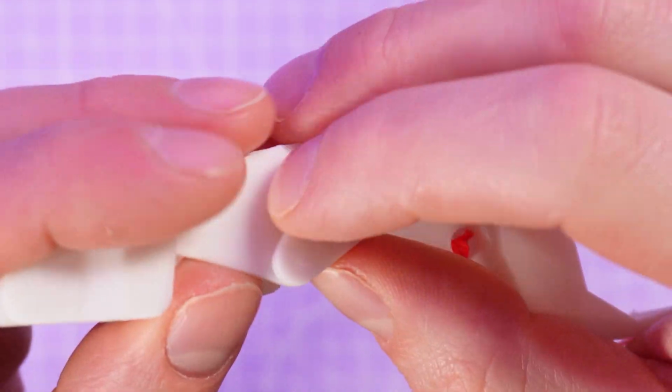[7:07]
I went through a lot of iterations to get a solid design on this one. Initially, I had all the segments sticking together and nothing was moving, so I made variables in my CAD model to test different gaps between adjacent segments and the conical pivot points. Side note, the reason that the pivots are cones is because it's really easy to 3D print the entire shape, including its overhangs.
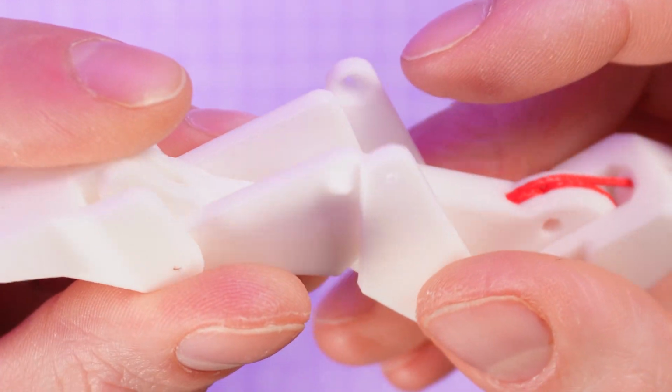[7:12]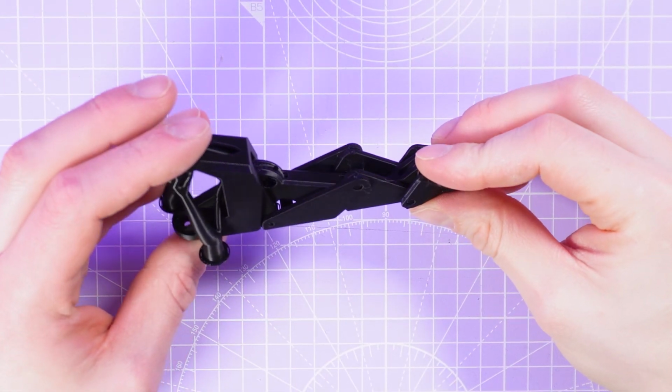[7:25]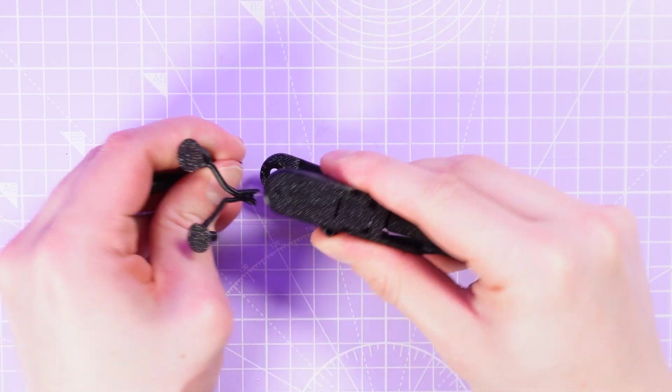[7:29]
In some of my earlier designs, I still had overhangs which were over 45 degrees, which meant that I needed supports when I 3D printed it inside of the fingers that were really hard to remove, but eventually I found a configuration for all of the different segments, which meant that I needed no support at all on any parts of the finger, except for the pulley, which I have a little cutout for, and some parts which allow it to connect to the palm, which I can talk about later on.
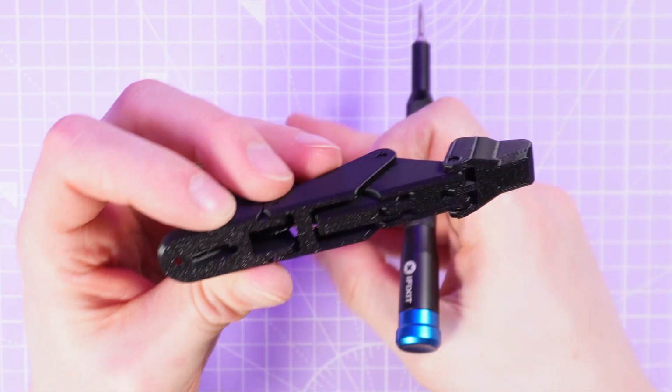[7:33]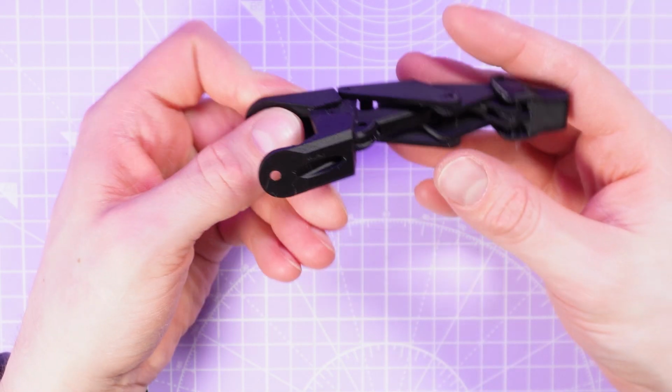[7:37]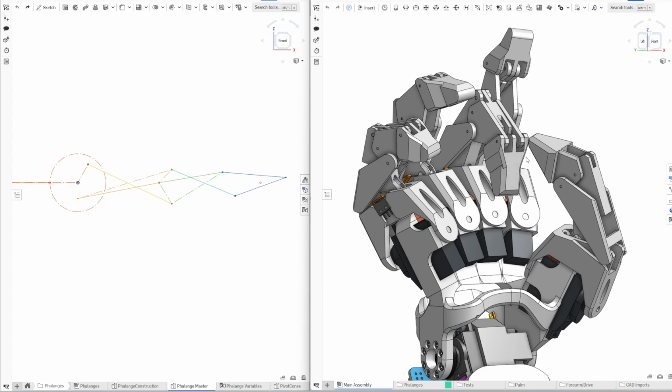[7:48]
I spent a whole lot of trial and error tweaking variables to make this finger print well, but also to get a natural movement arc and to try and get a range of motion that will allow me to grasp well. I'm really happy with the result in its current state, but the two main issues I'm having is that one, the flexion arc is a little shallow, which is mostly a function of the palm design, which I'll come onto later, and while some of the segments are securely locked in place, some of the longer segments have some flex
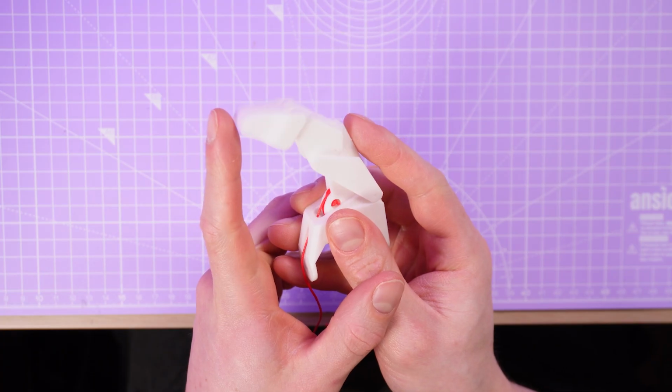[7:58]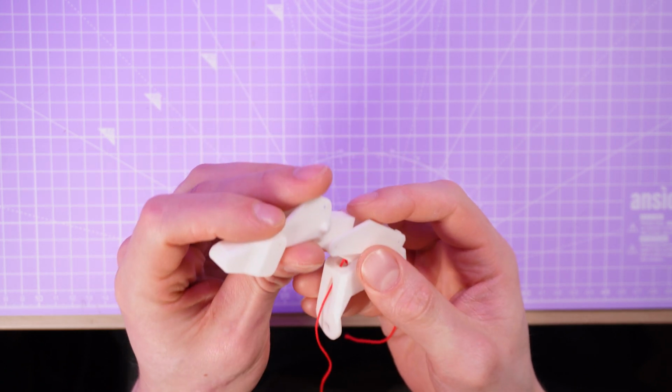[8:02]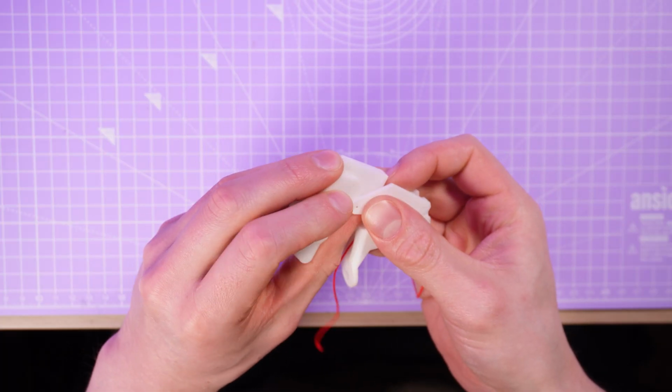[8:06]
in them, and this can result in some of the pivots popping out of place when the finger grips too hard. It would be so easy to just put a screw here to lock everything in place, but I don't want to weigh it down, and it would also be so sad to add fasteners to an otherwise entirely fastenerless design. I'm curious to know if any of you guys have any ideas for a print-in-place locking pivot solution that doesn't add any extra width.
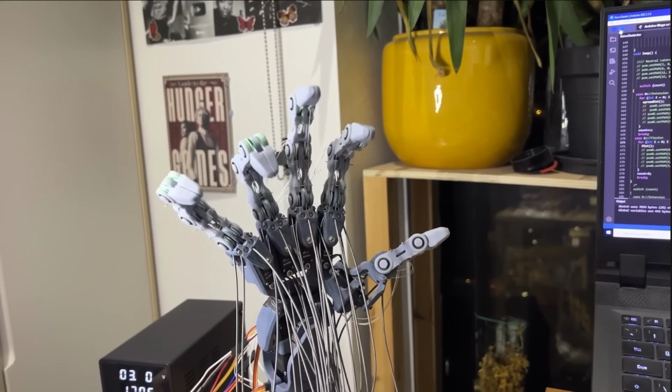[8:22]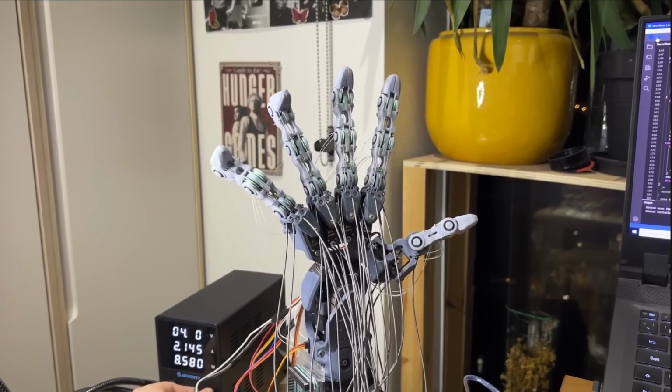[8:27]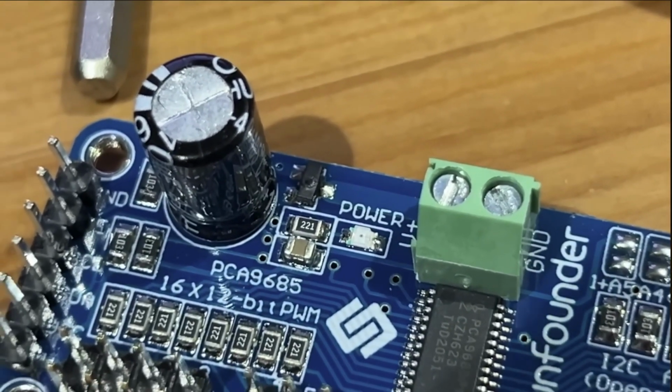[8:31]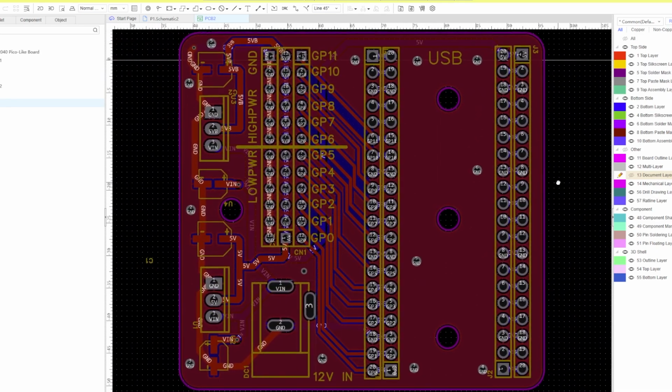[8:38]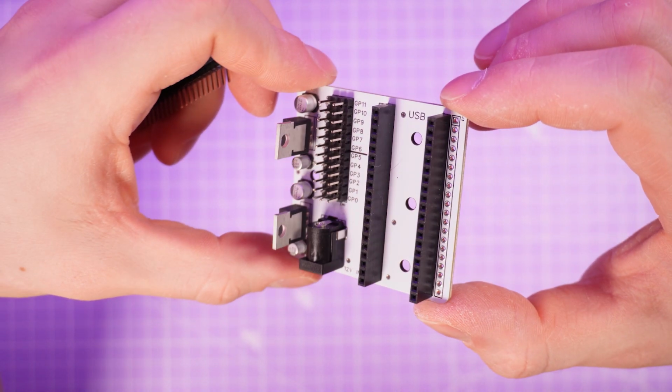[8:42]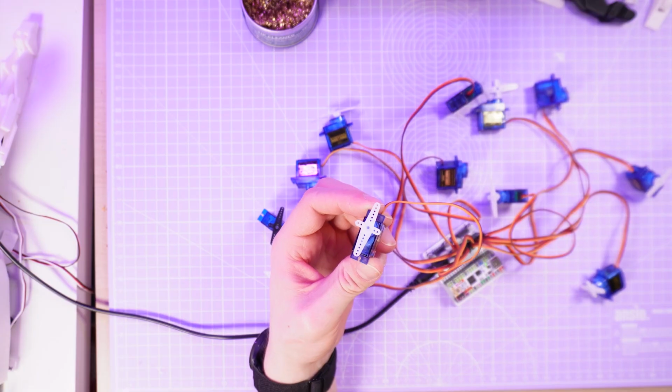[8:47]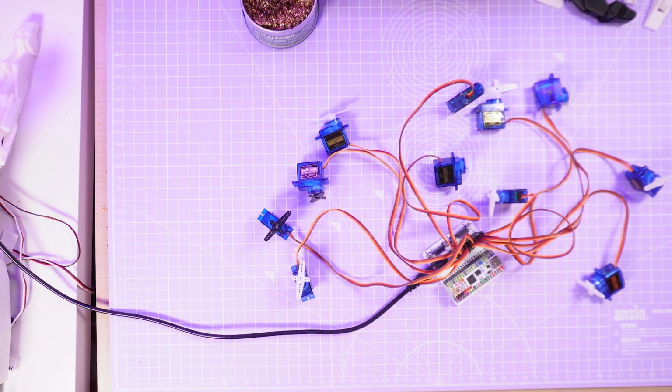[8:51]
So if you were following me when I made the Delta hand, you might remember that I was having a hard time supplying enough current to all 21 of my servos, and after blowing up a few PCBs, I just ended up limiting the voltage, which drastically reduced the speed and power of that prototype. This time, I used Easy EDA to design a dedicated power supply board. Obviously, I had an easier time since I only had about half the amount of servos, but I designed the board to handle upwards of 6 amps by having two separate voltage regulators, each supplying half of the motors with up to 3 amps total.
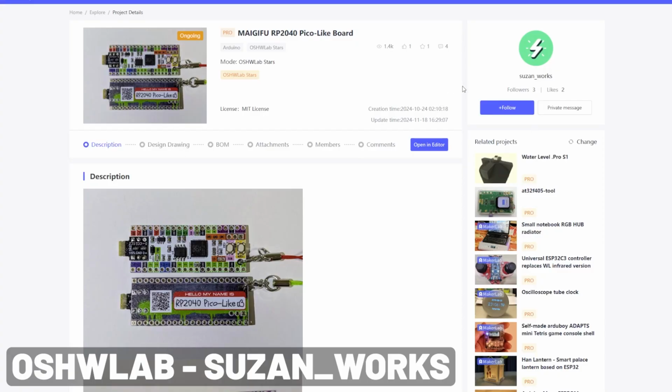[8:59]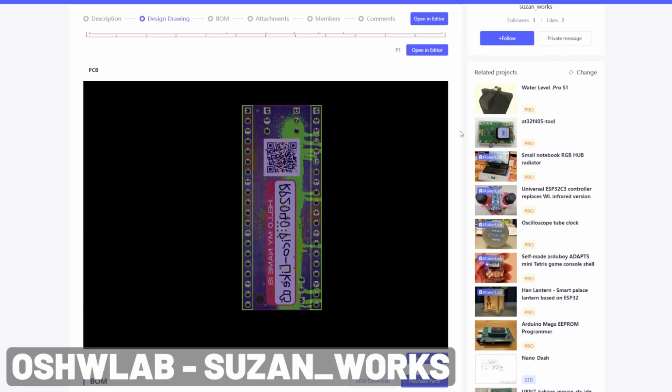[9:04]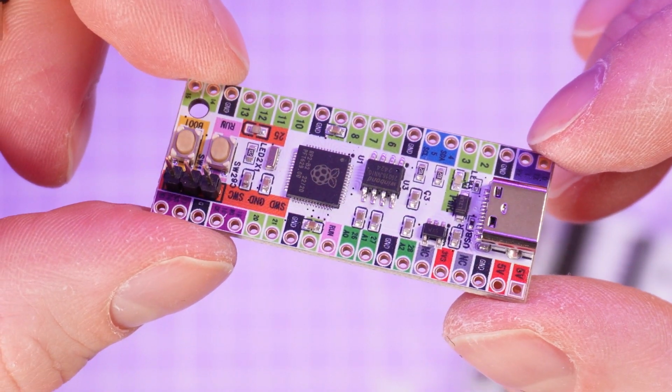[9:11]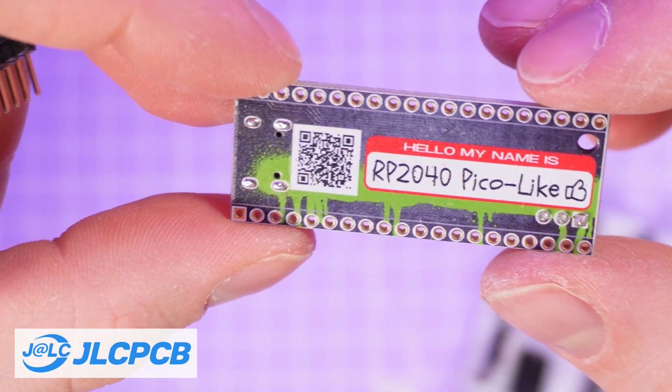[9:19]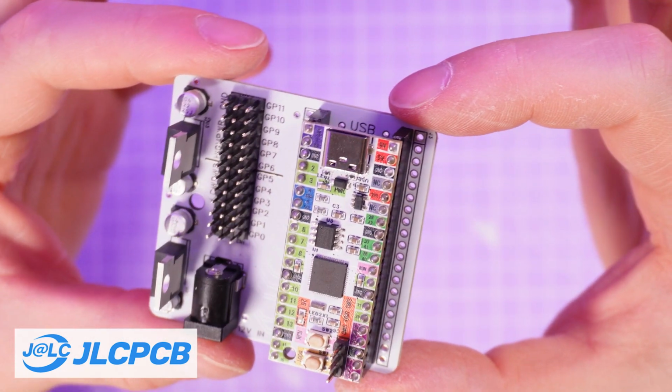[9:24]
I also designed the board to house a Raspberry Pi Pico. I was very fortunate to find this RP2040 Pico-like board by suzan_works in the Open Source Hardware Lab, with an MIT license, meaning it's pretty much completely open source. I made some modifications so that I could use a simple USB-C port rather than the original PCB connector, and another cool thing about this design is that it makes use of JLC PCB's full colour silkscreen printing, which is something that I've yet to delve into really, but it means that you can print a lot more detailed and colour coded information on your PCBs, and it means you can design all the details in a single PNG image.
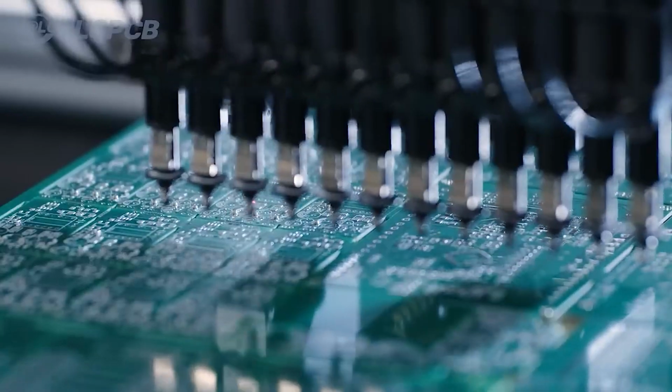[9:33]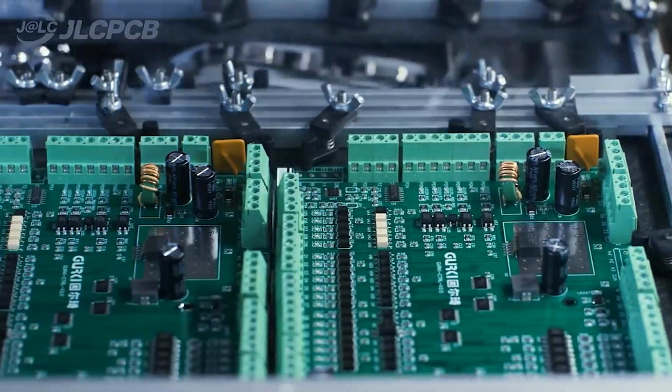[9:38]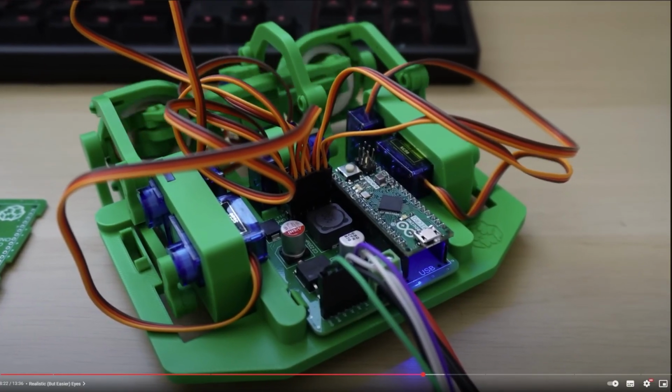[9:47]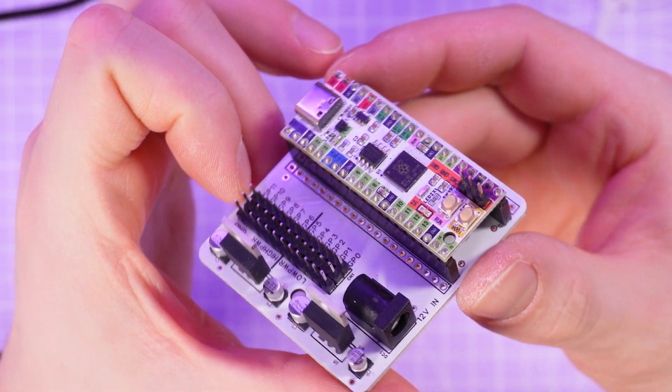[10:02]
Having this starting point for the Pico light board is really exciting to me because, as some of you might remember, I've been experimenting with trying to develop my own driver boards for my eye mechanisms with built-in microcontroller chips, i.e. it would be a complete and ready-to-go controller board without needing to plug in another board like an Arduino Nano. But so far, I have not been successful. Having this open source design as a starting point to integrate into larger projects is really exciting for me.
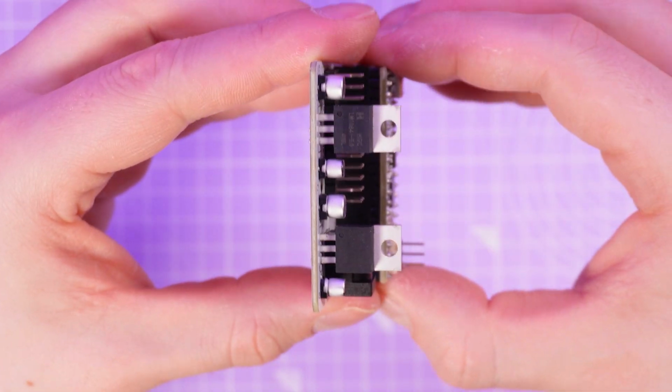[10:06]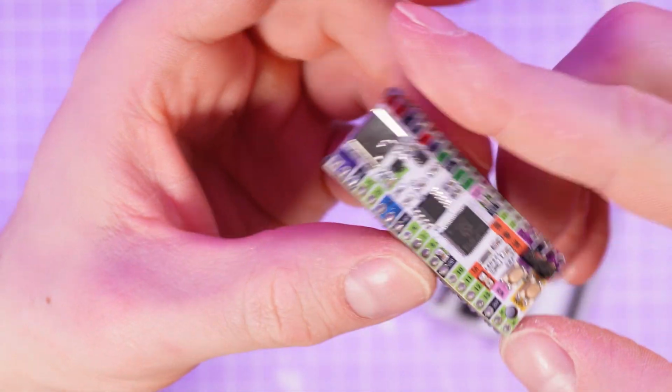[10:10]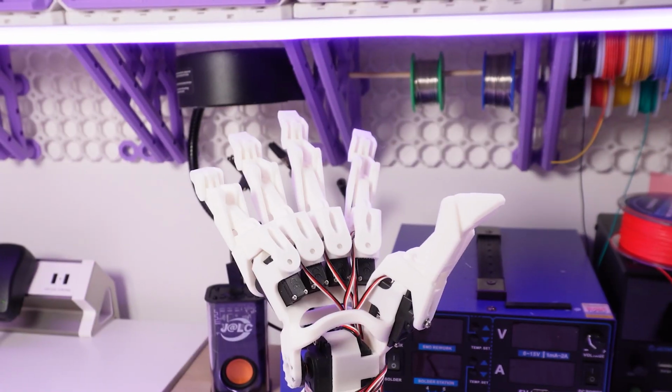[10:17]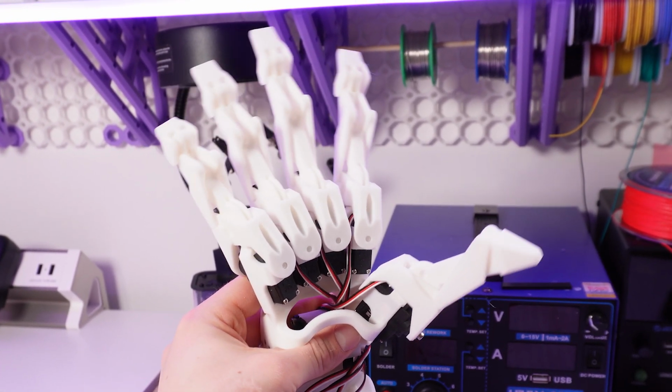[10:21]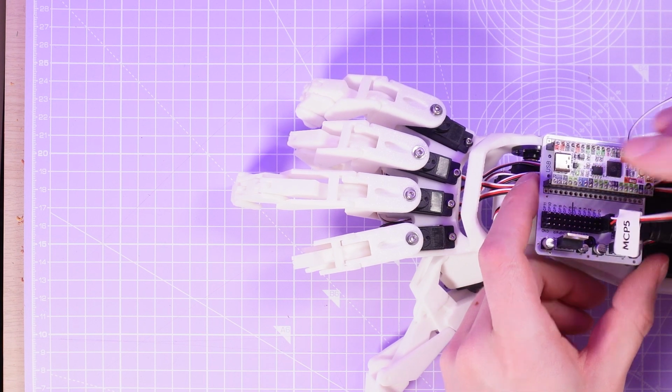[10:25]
I'll be honest, I've not tested this design extensively yet. As you can imagine, the CAD design and physical prototyping portion of this project was by far the most time consuming part, but I have been using Thonny with Pico boards to start controlling simple actions in the fingers, although as you can see, I'm at a pretty early stage. What I can say for sure is that the boards that I ordered from JLC PCB are working great, and I'm certain that I'm onto a winner with this design.
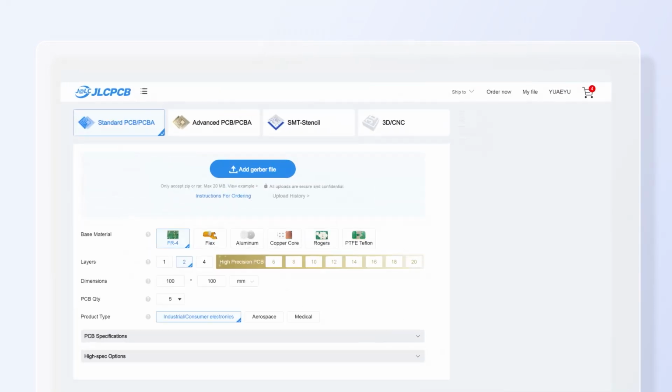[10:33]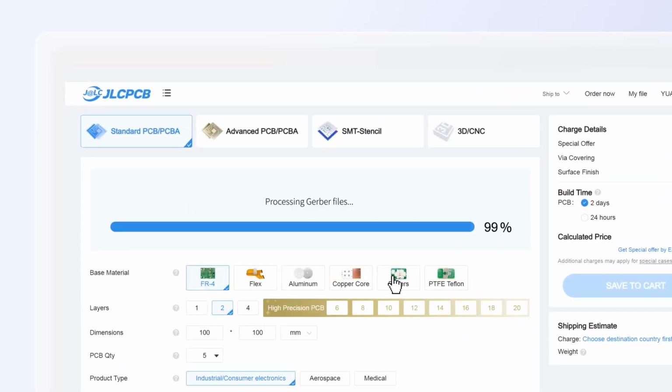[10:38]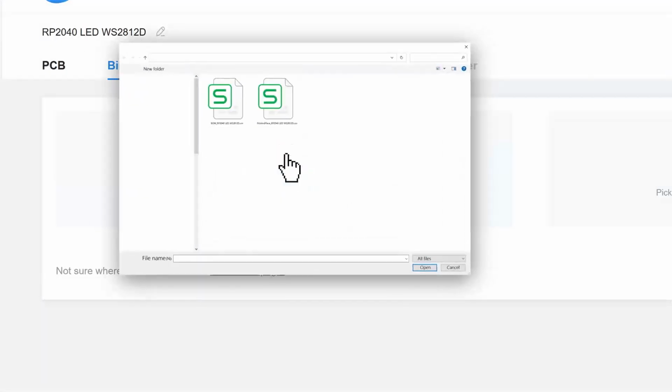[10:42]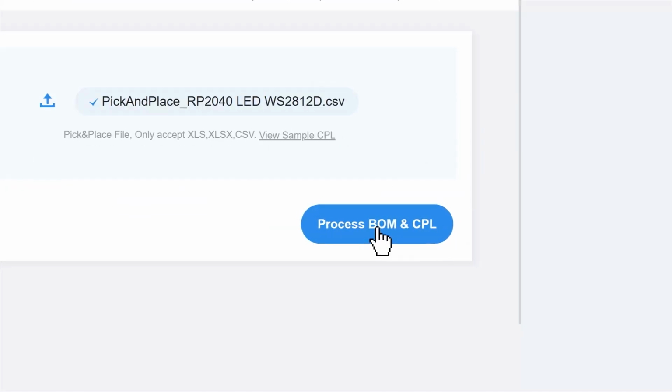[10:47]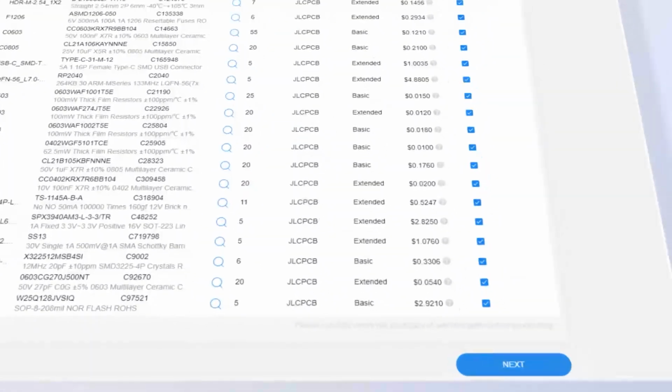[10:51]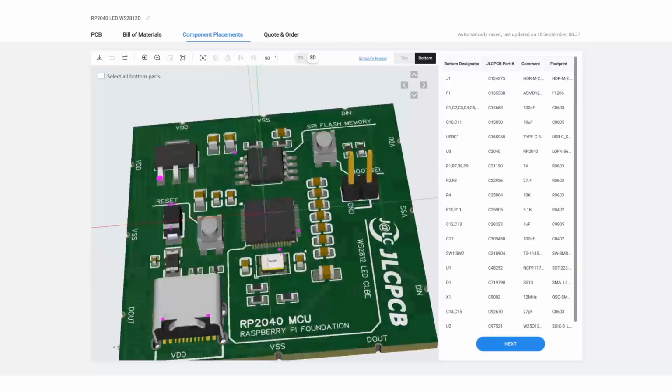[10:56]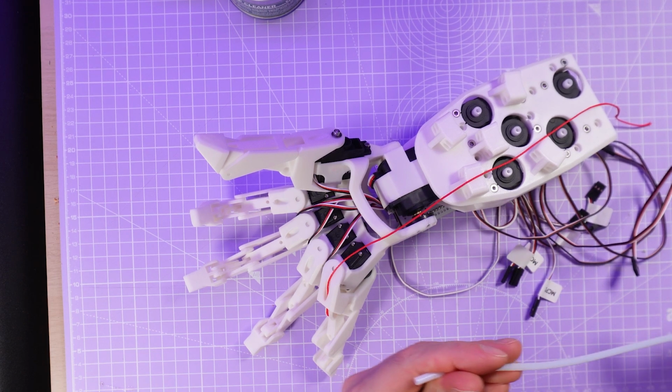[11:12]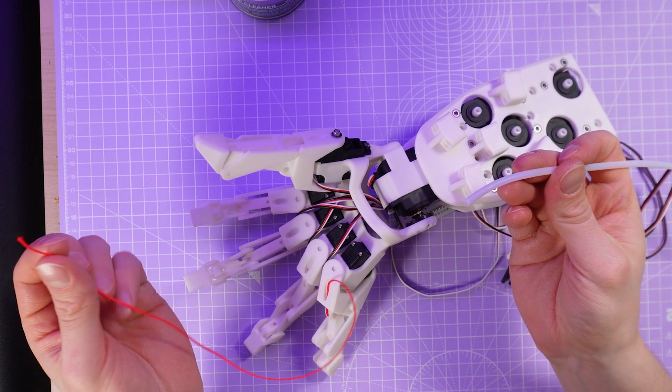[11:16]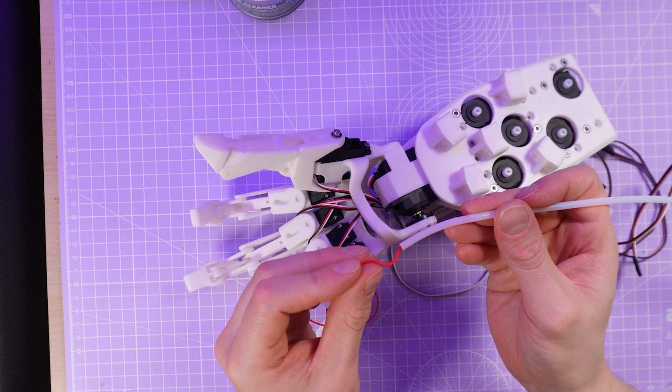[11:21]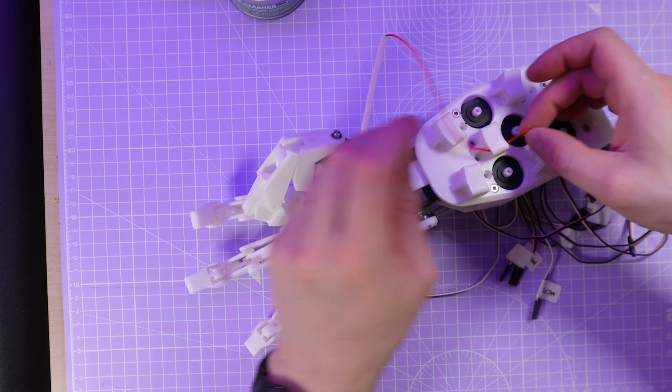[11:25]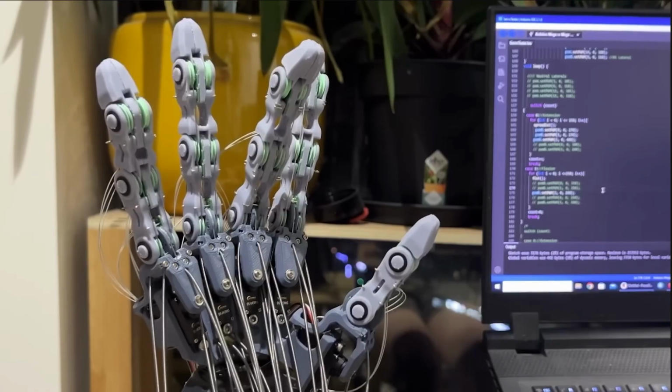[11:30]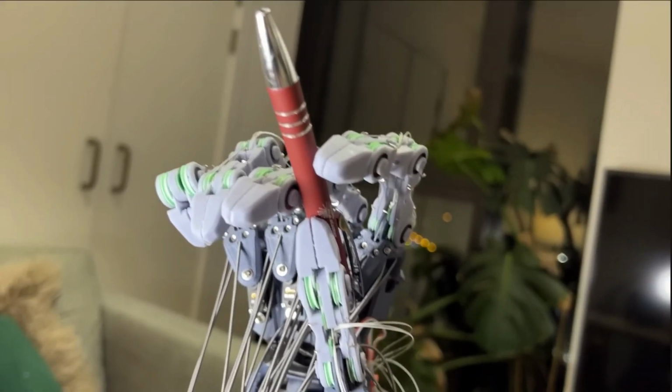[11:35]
Now, the flexion of the fingers is driven by motors mounted in the forearm, same as with all my hand designs, but this time I wanted to make things easier, and I'm using much thicker 1mm braided polyethylene cord and the same PTFE tubing as is used in 3D printers. In fact, I actually just stole this from the spares that came with my Bambu Lab P1Ss. The purpose of this sheathing is to give the braided cord something to pull against, like a brake cable in a bike. Last time, the amount of effort I went to find and spec this 1mm spring wire housing was probably one of the main blockers that meant I took so long to finish that project.
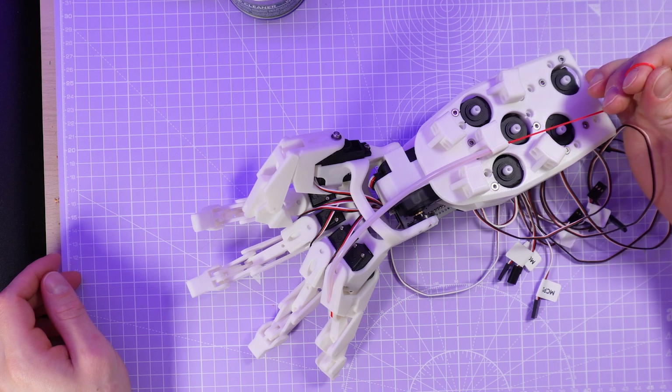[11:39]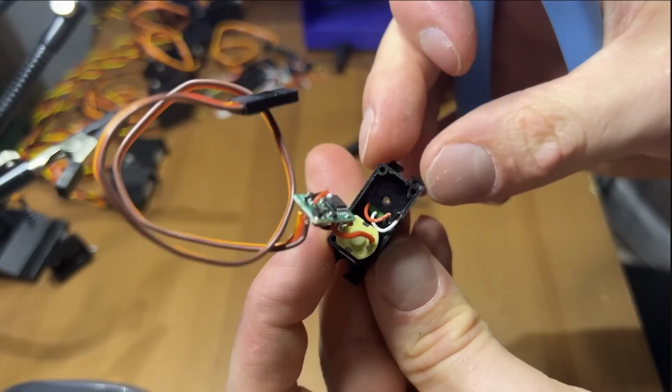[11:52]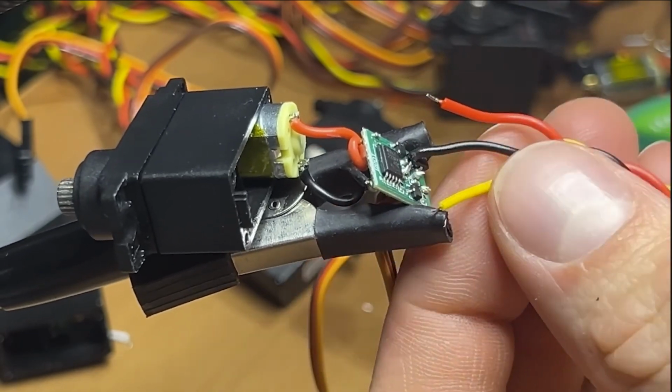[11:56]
The forearm this time is a really simple two parts with all of the servos clamped in between. The biggest reason that assembly was such a nightmare on my Delta hand design was that for each servo driving a finger, you needed to open up the casing, desolder the super tiny internal sensor, file off the part of the gear which restricts its movement to 180 degrees, and then solder on a new cable to replace that internal sensor with sensors mounted in the finger joints. I think that this whole process was just too high a barrier to entry for anyone else to get started with this project, so this time there's none of that.
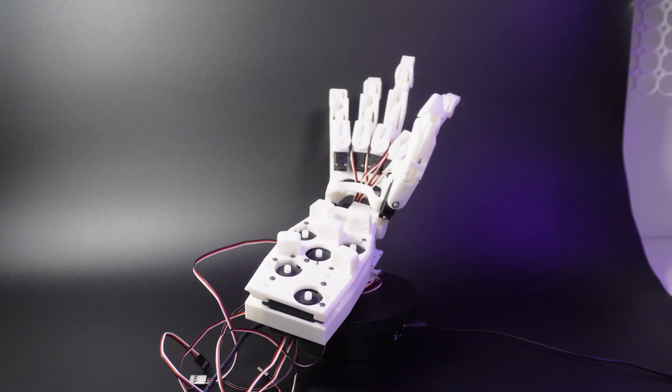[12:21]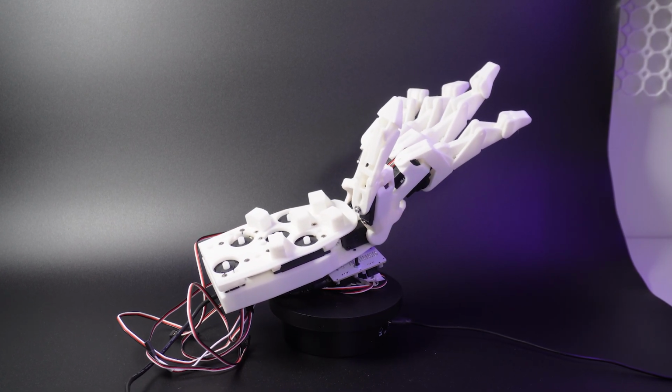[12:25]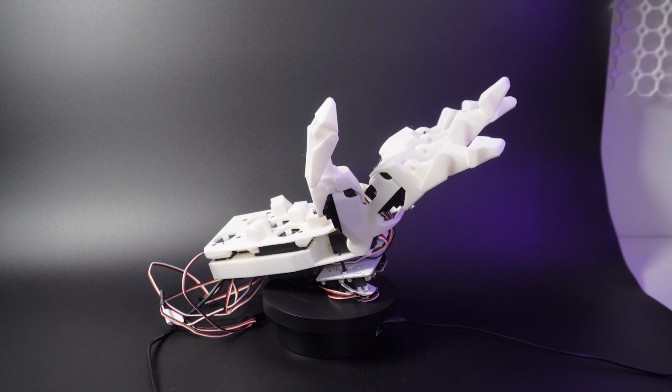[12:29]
It would be possible to use an unmodified servo without any sensors in the fingers, relying on the servo's internal angle sensor to guess the resultant position of the fingers, but think of how much stuff is in the way of that transfer of motion. There's the servo going to a pulley tied to a cord going through a tube, passing over a wrist and then into the joint of the fingers. There's just too many parts which can move and flex, and it would be really hard to keep things calibrated.
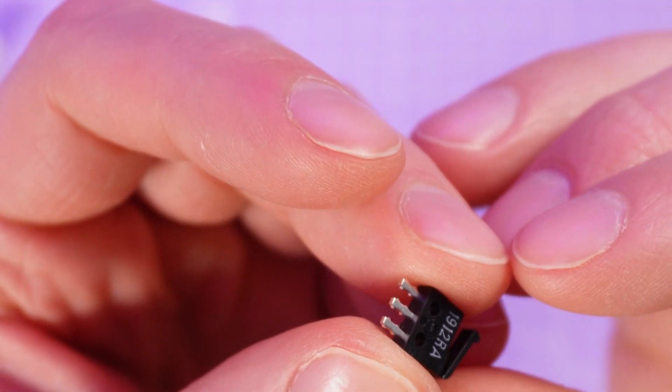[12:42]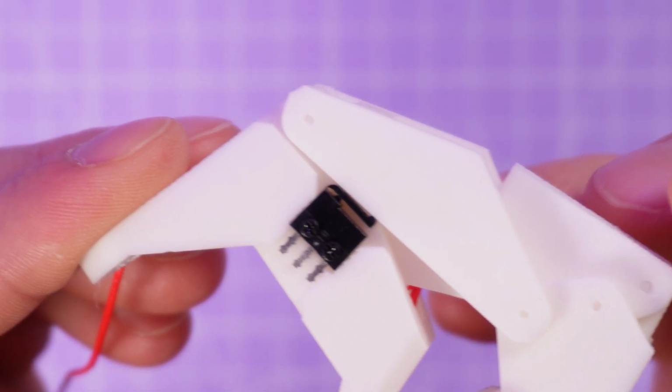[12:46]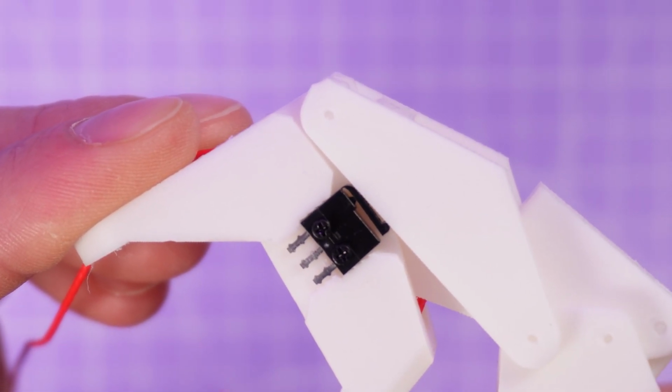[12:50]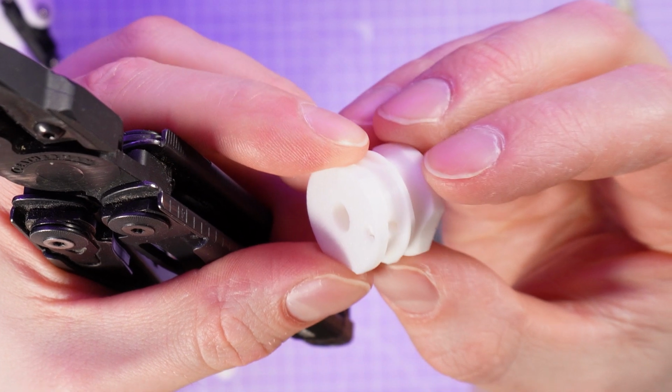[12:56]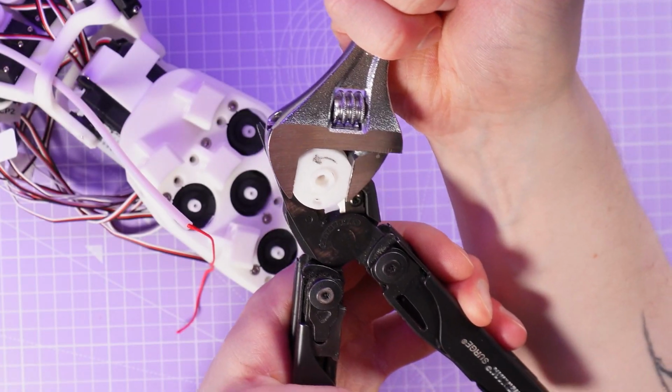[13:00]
So my approach this time is to infer the position of the fingers based on the position of the servos, as I mentioned, but this time I have one simple homing switch that the fingers can move to when the hand is first powered on, so we can be absolutely certain of the relationship between the position of the fingers and the angle of the servos, even if we had to adjust the tension of the pulleys or the fingers got knocked out of calibration. This also allows me to have a pulley which can be tightened at any time without having to worry about how it might affect the calibration of the fingers' positions.
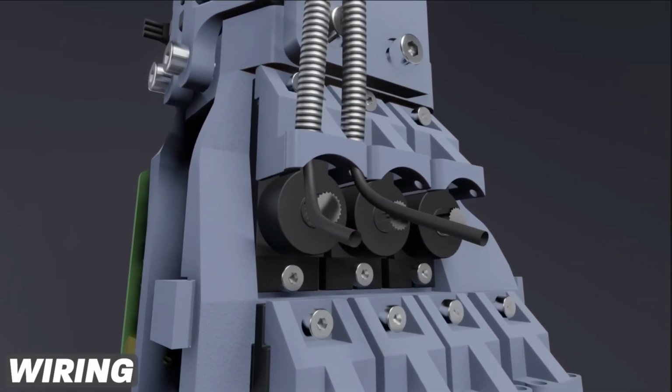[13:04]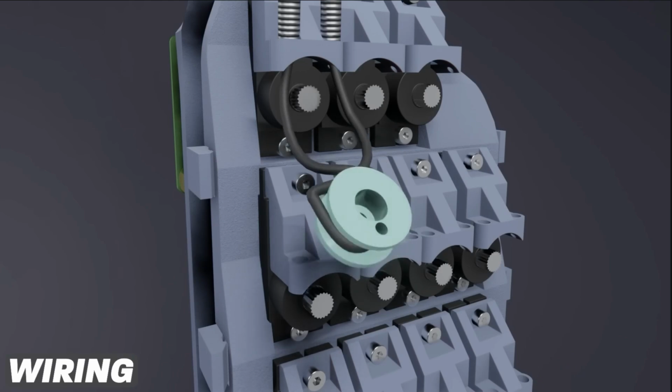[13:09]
In the Delta hand, I had to pull through the cord while keeping a firm hand on the pulley, do a little loop and hope that this was all tight enough, but this time I can simply twist my pulley to tighten it up. I'd like to expand on this to have a self-tightening pulley, but that's probably a job for next time. I haven't programmed the system for homing the fingers and keeping track of their positions yet, but it's already looking very promising.
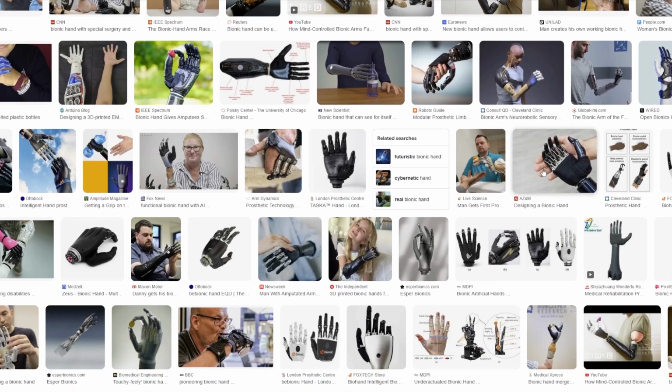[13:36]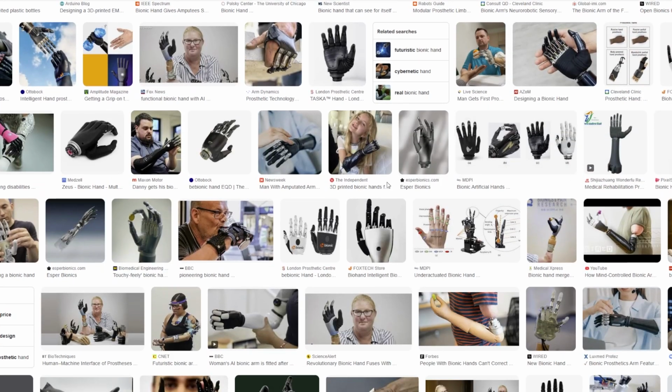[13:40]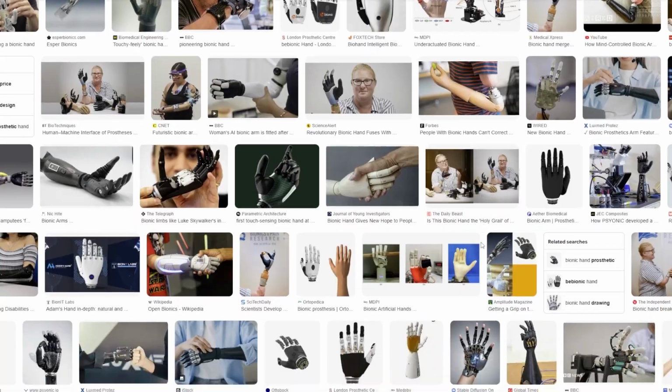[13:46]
Although, as mentioned, I am limiting the functionality of the hand to make it more accessible, it was really important to me to keep the lateral motion of the MCP joints, which allows you to splay your fingers. One thing which I always notice in other robot hand designs is the orientation of all these MCP joints, the ones at the bases of the fingers and how they form the palm. Understandably, a lot of designs are completely flat, but real hands not only have a slight inwards curve, but they're also flexible in the palm, which gives us even more dexterity.
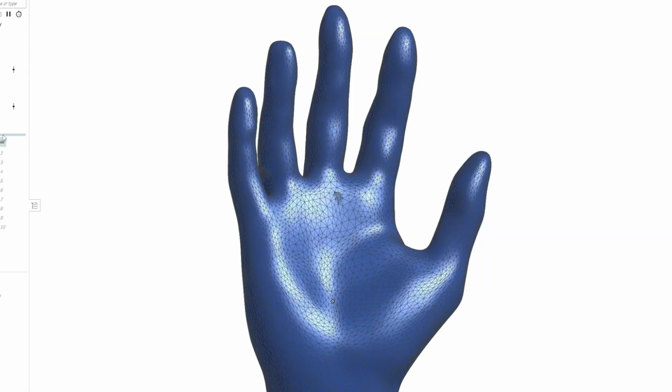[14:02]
When I designed my palm and the orientation of all the motors which make it up, I wanted a more concrete reference point to go on to find these positions, and so I decided to use the RevoPoint POP3 Plus scanner to estimate these orientations in my own hand.
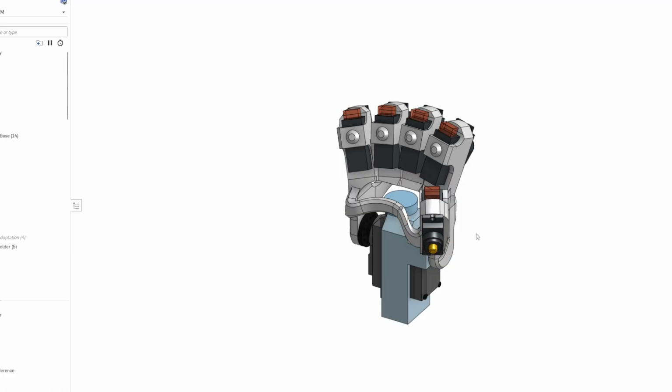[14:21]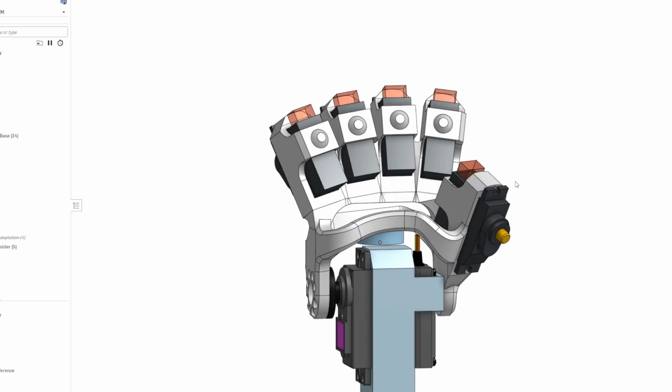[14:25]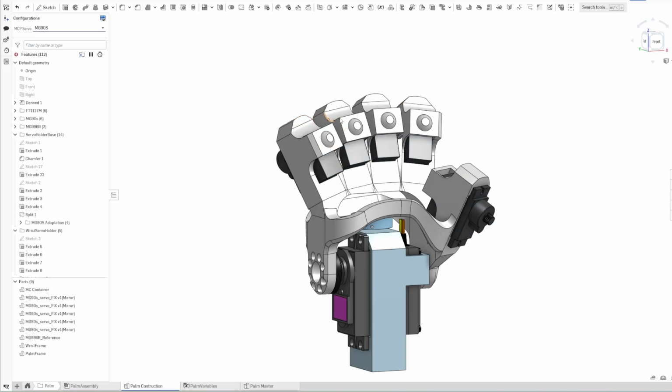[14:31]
The issue is that while there's plenty of scientific data about things like length of the finger segments and ratios between them, some things are really just hard to quantify, and so I used the 3D scanned mesh of my own hand as a guide for how I was going to place each motor and ultimately how the hand would look. I chose a slightly heavier duty servo than the MG90Ss which I used last time, although I should mention that I'm making this design configurable for different commonly available servos, and annoyingly this does make the palm a little bit thicker than my own.
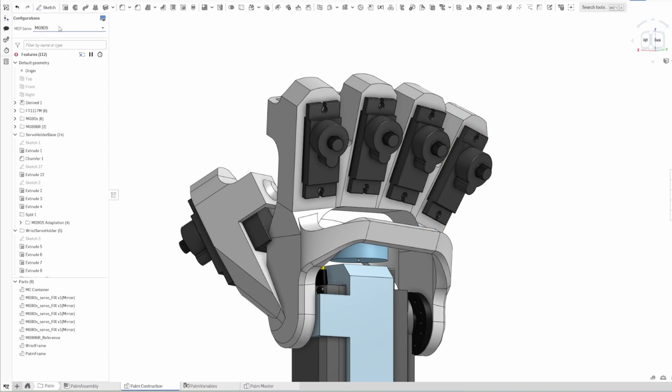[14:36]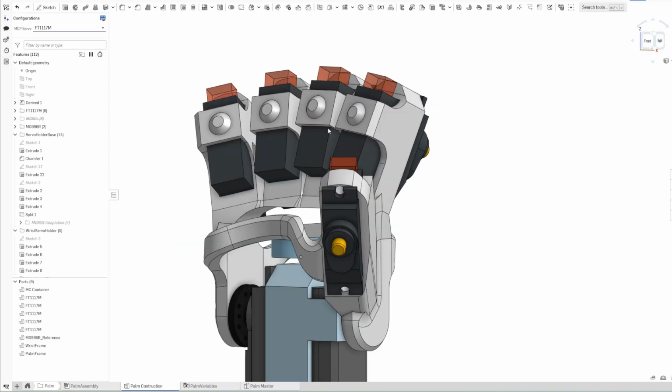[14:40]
This is the whole reason I tried to design my own flatter servos in the Gamma hand. I just didn't have the skill level at the time, but I definitely want to revisit that sometime.
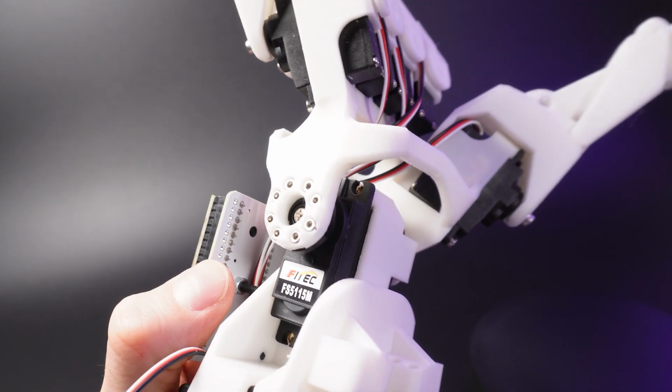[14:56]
I also actually thought about the cable management system a little this time, which has always been one of my most neglected areas in previous versions. Luckily, it's going to be a lot simpler this time since there's far fewer cables and Bowden tubes, but I made a few simple loops to guide everything to where they need to be.
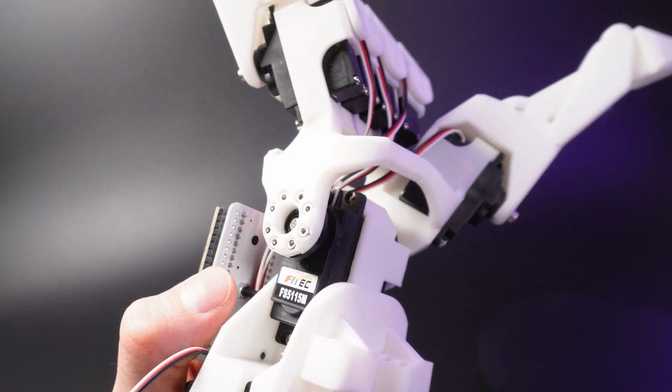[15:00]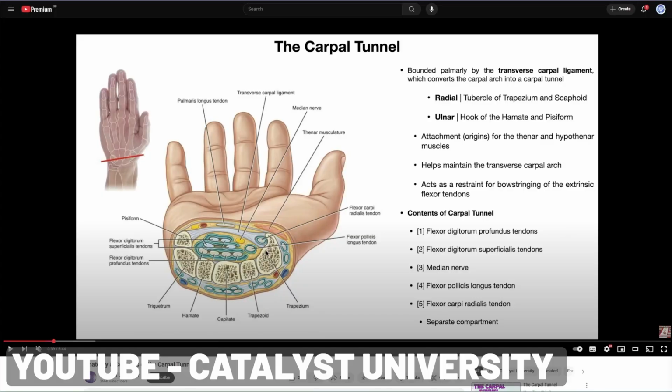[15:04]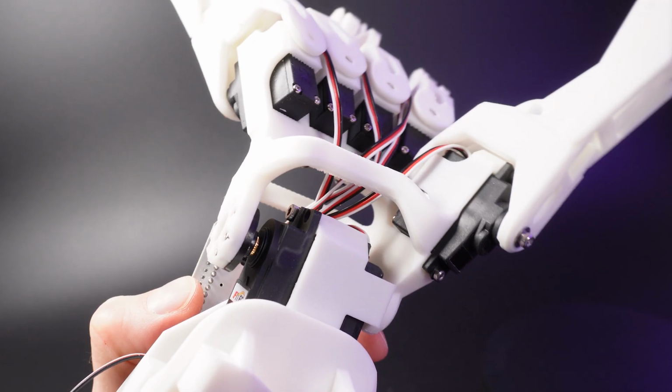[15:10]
This is kind of inspired by the carpal tunnel in human hands. The bottom of the carpal bones make a sort of crescent moon shape, and all of the important bits run through the tunnel. Even though this is pretty minimalistic at the moment, my plan is to test out this version for a while first, and then once I have a good idea of how everything moves, I'll probably make some more tight-fitting guides later.
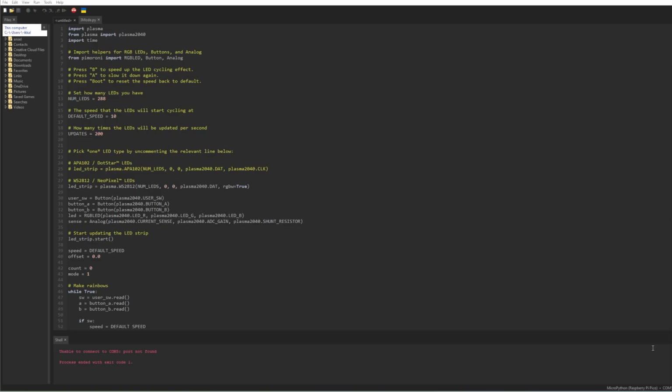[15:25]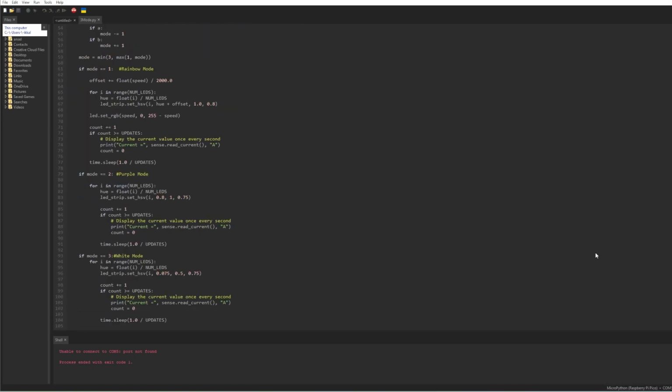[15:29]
So as I've switched to an RP2040 based control system, I think I'll be doing most of my programming in Python through Thonny. There are libraries which make it very easy to generate PWM signals to drive servos, so I don't think that will be a problem. The main control challenge will be how I keep track of the positions of the fingers
relative to the home position, which is where the finger touches the homing switch. I think I'll need to have a counter for each finger that approximates angles based on the time that the servo is moving at a given speed. I believe I can also configure the homing switch pins on the Raspberry Pi Pico to be interrupt pins, which would mean the system can accurately rehome whenever the fingers naturally get to their endpoint.
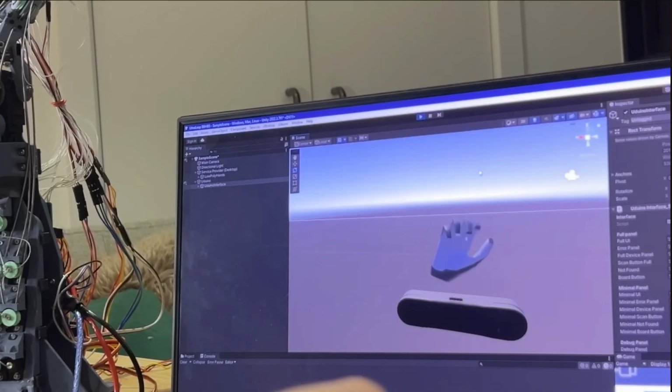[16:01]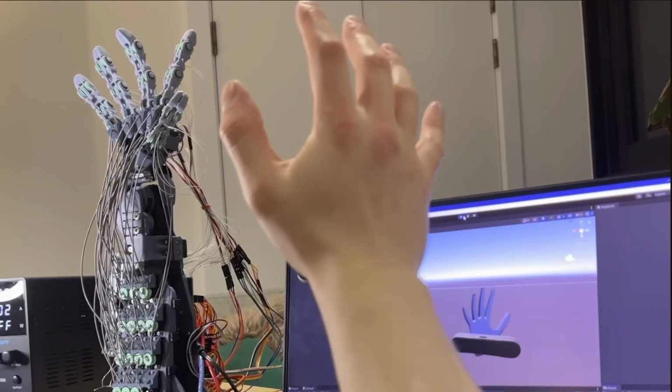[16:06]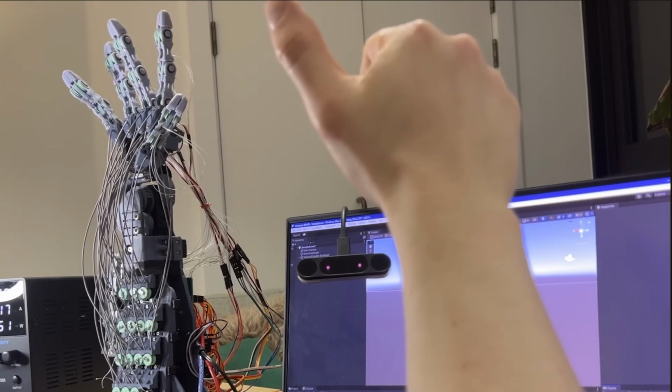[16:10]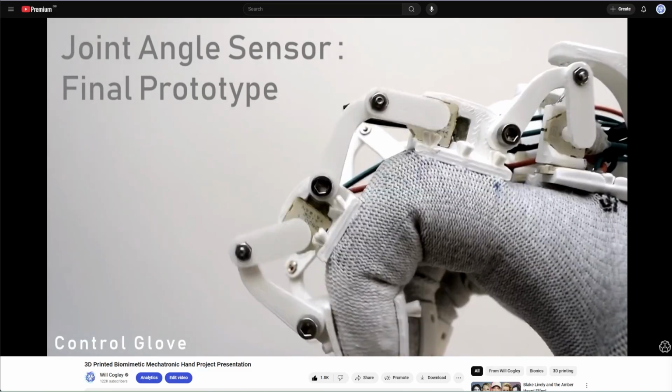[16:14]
I also need to think about how I want to actually drive and test the hand. Last time I used a Leap Motion controller but had a lot of issues with lag. In my beta designs, I also had an accompanying control glove, which was extremely temperamental at the time, but also a really fun thing to design. I'm not sure if it would be practical, but I am considering designing some kind of controller. Not quite a control glove, but maybe some kind of ergonomic system of joysticks.
So although the hand kind of looks done, there's still loads to do. I mentioned a few things that I want to improve already, but besides those, I want this design to have some kind of grippy texture for the fingers, since that's something I've lacked in previous designs. It'd be great if I could find some kind of flexible 3D printable grippy surface, but unfortunately I don't think that TPU or anything else that I've tried really has the grip that I need, and so I probably will need some kind of adhesive strip that I add on afterwards.
Once I'm happy with the whole electronic system too, I will be able to combine Susan's open source Pico design with my power management circuit to have a single dedicated board for the whole project.
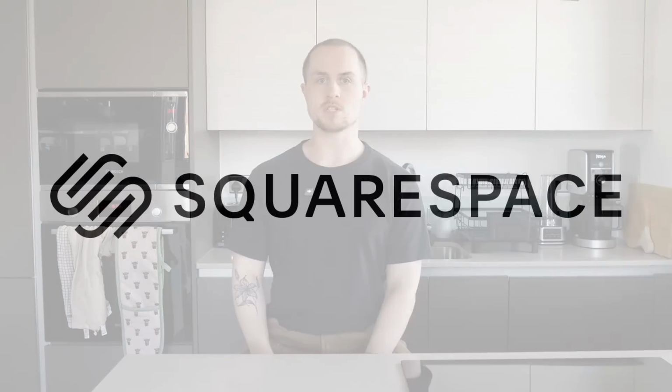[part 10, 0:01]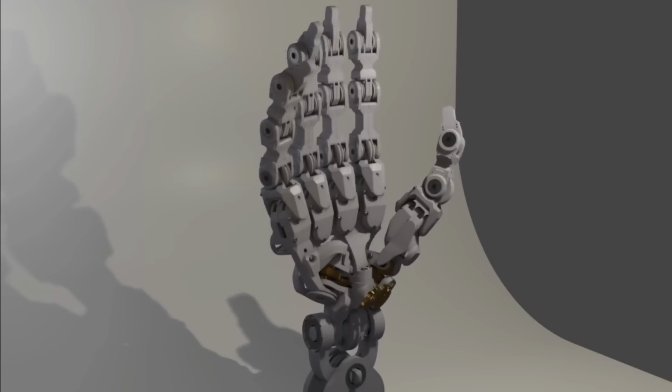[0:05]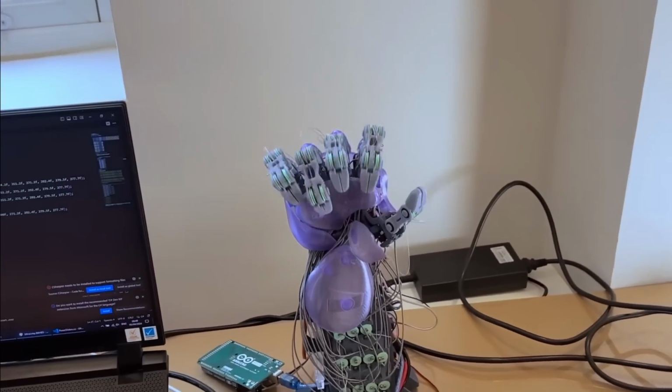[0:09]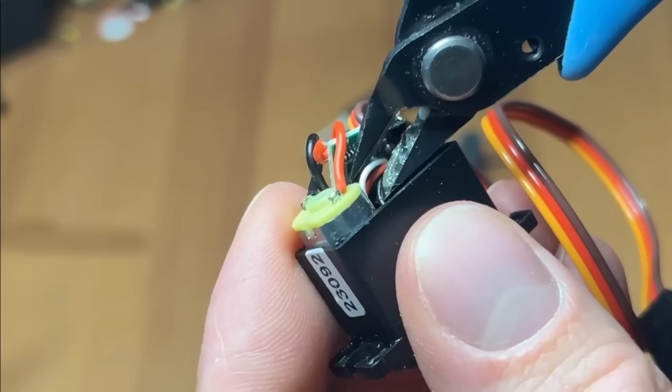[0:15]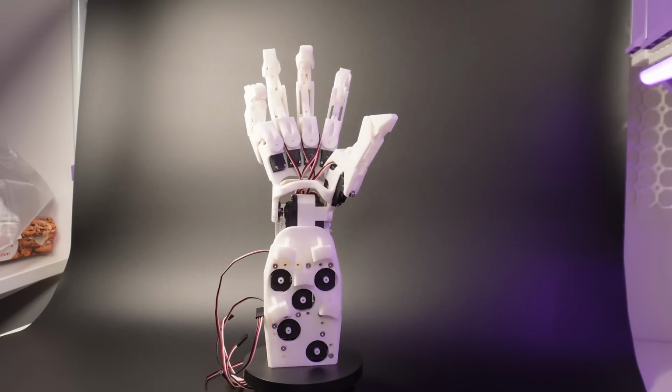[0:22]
As you may know, my bionic hands Beta, Gamma and Delta got a lot of praise for having biologically inspired designs and having almost as many degrees of freedom as a real human hand. But they're also known for being some of the least user-friendly, hardest to build and most complicated designs out there. The Epsilon hand, my fifth generation, is designed to be the opposite. It's a hand you can build at home.
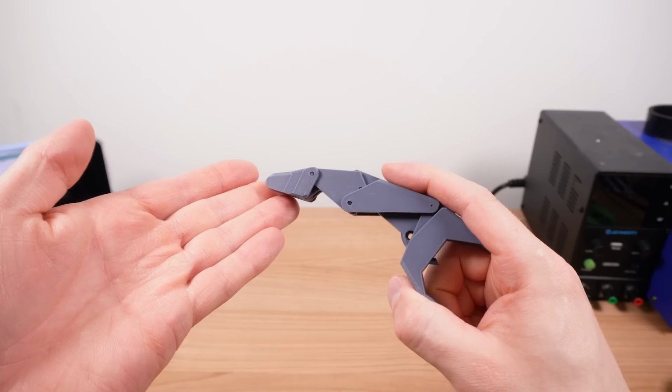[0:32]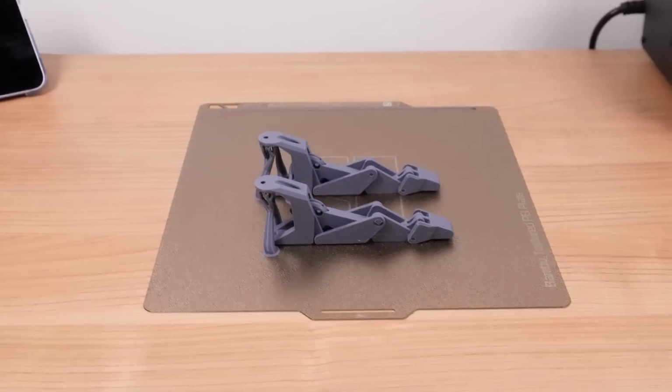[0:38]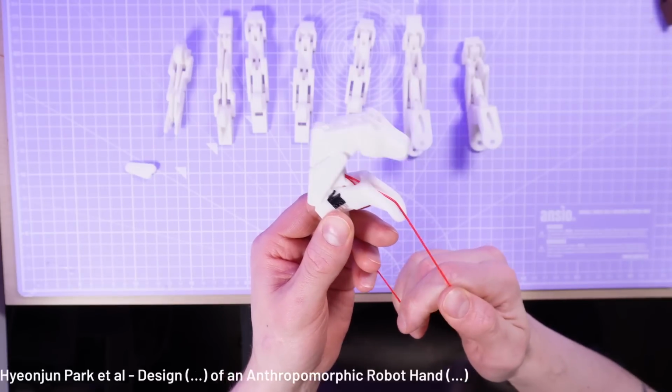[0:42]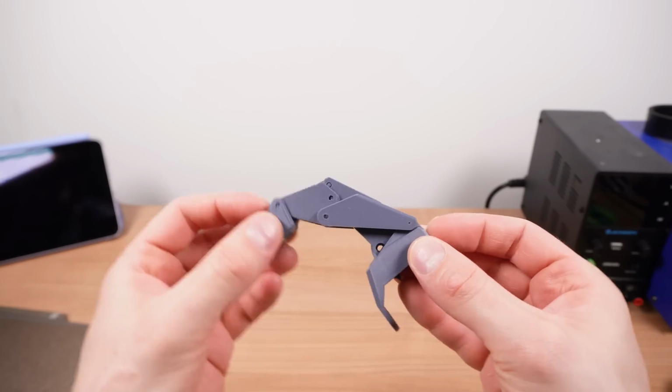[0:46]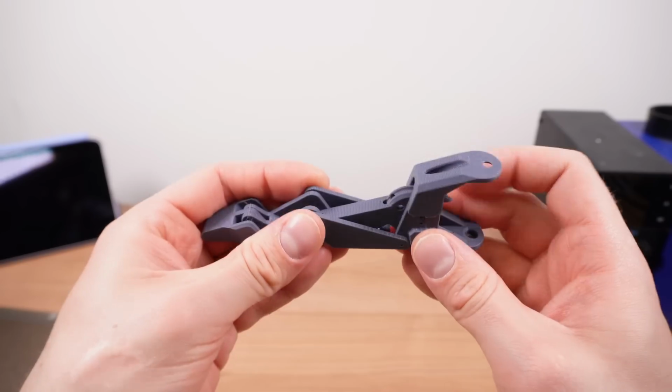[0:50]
But right now, it's not actually a hand which stays built at all, because as soon as you apply any pressure at all to the fingertips, the mechanism of the finger self-destructs. This is because I designed the whole finger mechanism to print together in one piece and move naturally based on a system of linkages described by Hyunjin Park et al. The mechanism prints in place and is self-contained. All of the pivot points are enclosed within the finger mechanism, except for one pretty important one, which was on the end of a long, flexible lever.
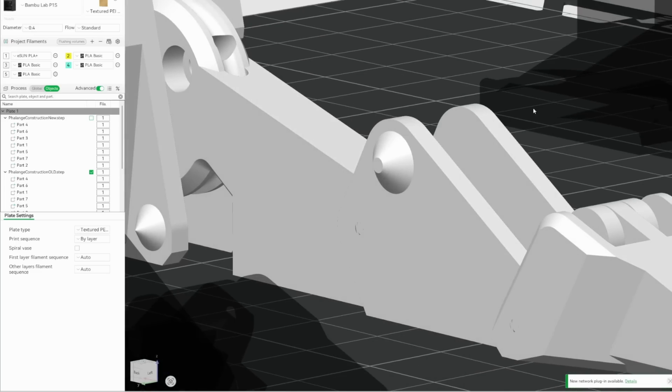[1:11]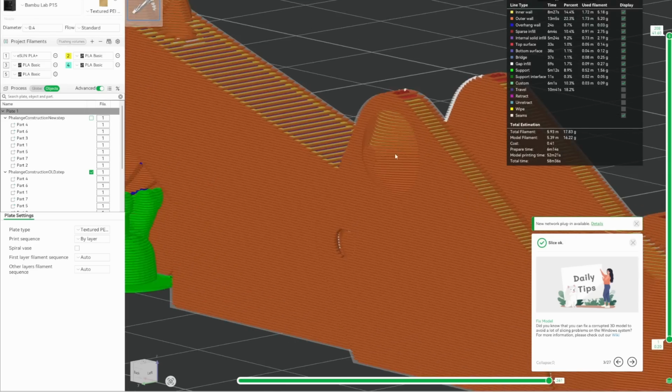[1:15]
In the last video, I threw this issue out to you guys to get some ideas, and there were some pretty good ideas, but I really wanted to keep this finger design 100% print in place, with no secondary processes, really for no other reason than I like the engineering challenge. My current pivot points are cones, which are easy to print in place because of the 45 degree overhangs, but a single cone pivot does not lock the two parts in position in any meaningful way.
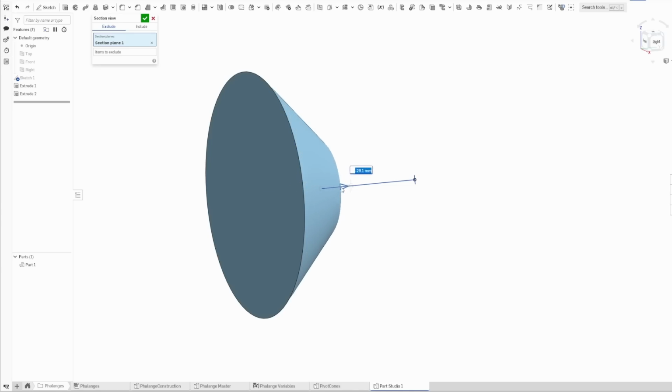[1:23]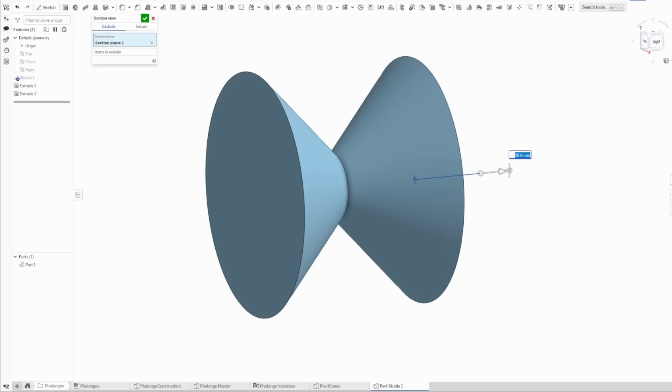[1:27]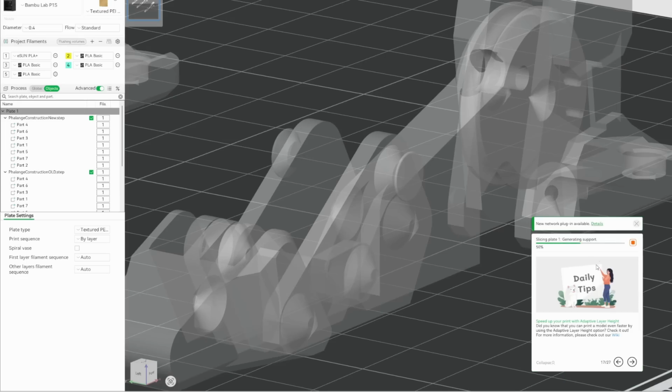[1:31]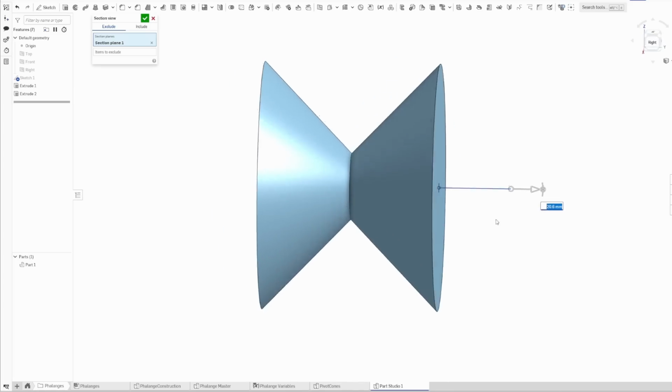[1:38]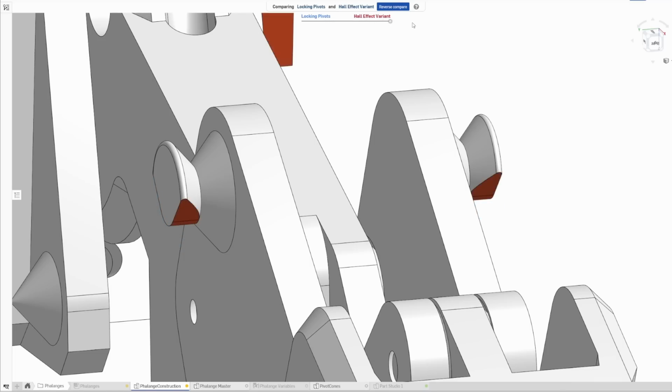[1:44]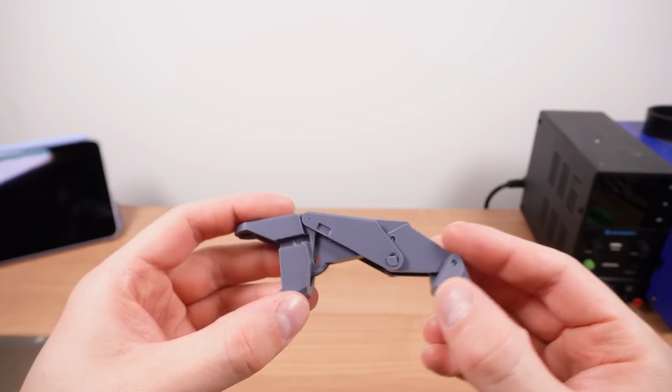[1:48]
If I had a combination of a cone and then an anti-cone, a V-shaped pivot surface, the two parts would be fully locked, but the 3D printer would have to print supports for the outer surface of the cone, which essentially starts in mid-air. So my compromise is to have this diabolo pivot shape, but with one half removed, meaning that there's no overhanging surfaces, and this can easily print with no supports. It's so satisfying when something you put a lot of thought behind designing works first time like this.
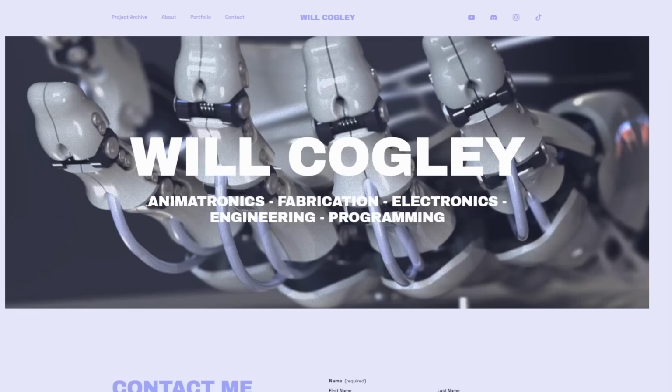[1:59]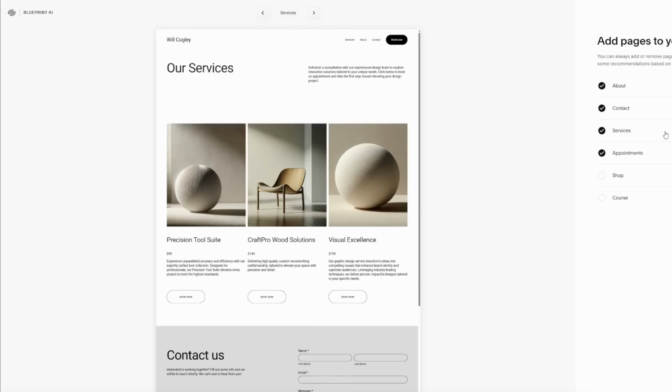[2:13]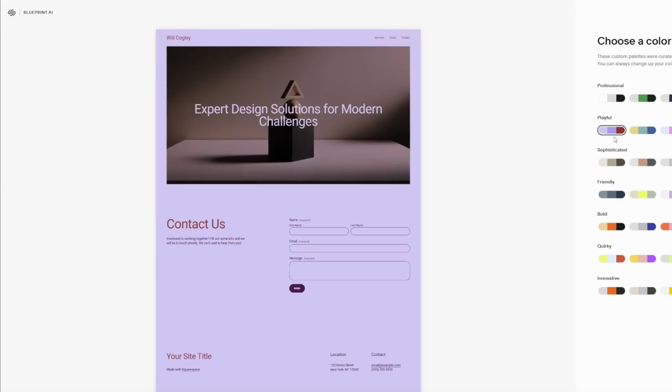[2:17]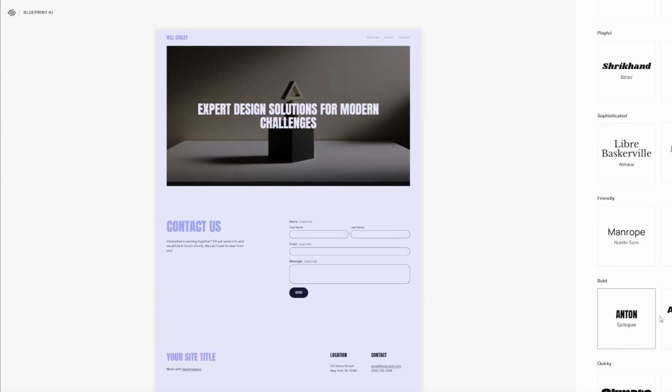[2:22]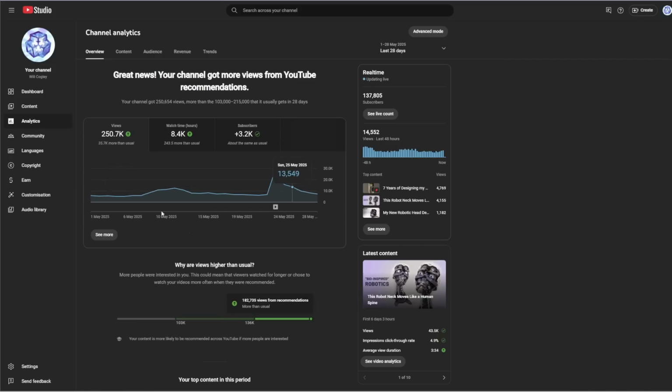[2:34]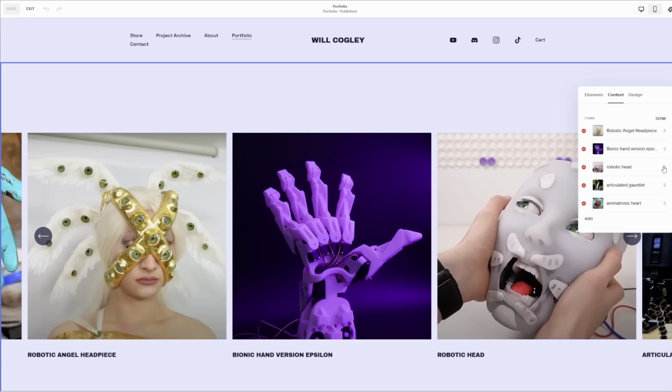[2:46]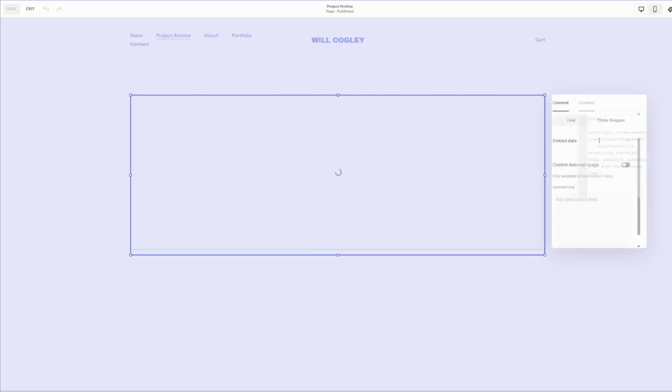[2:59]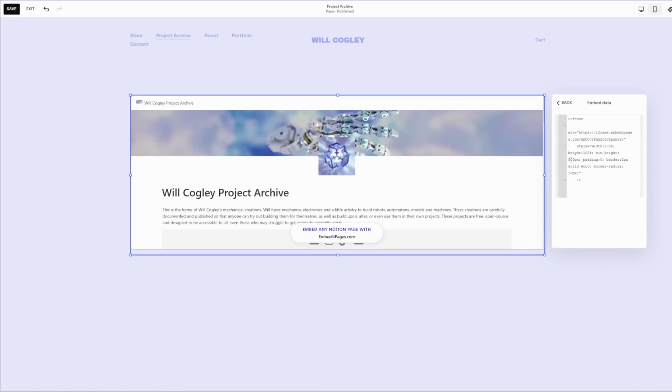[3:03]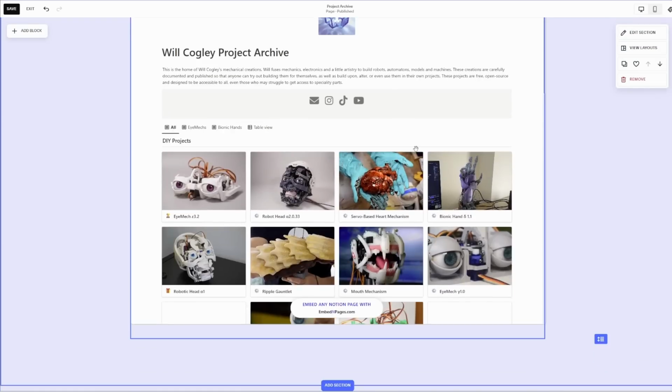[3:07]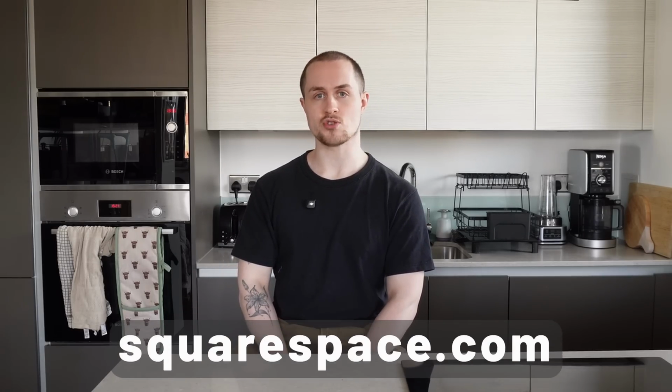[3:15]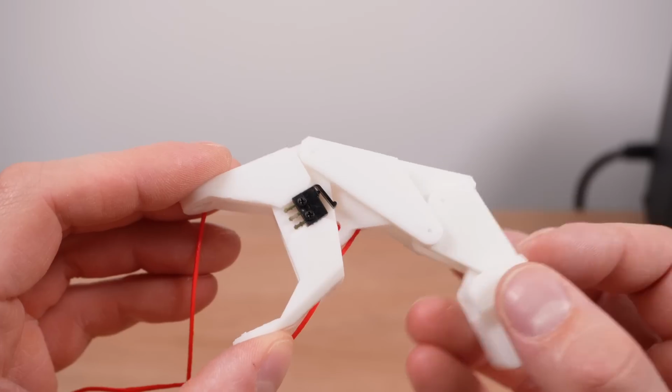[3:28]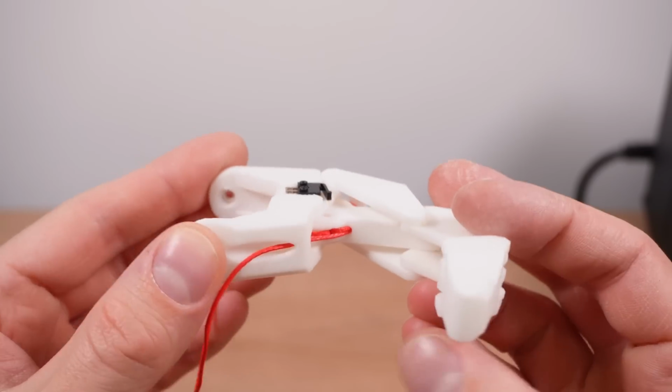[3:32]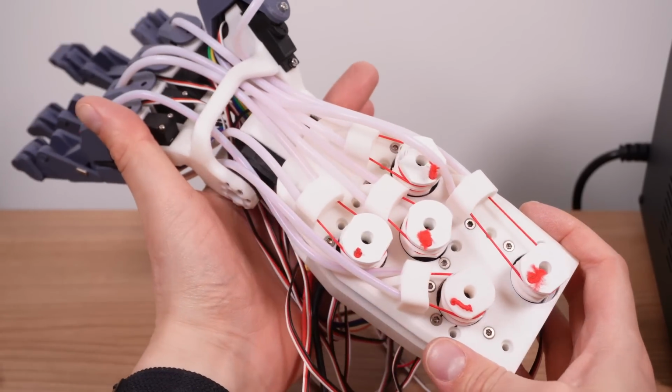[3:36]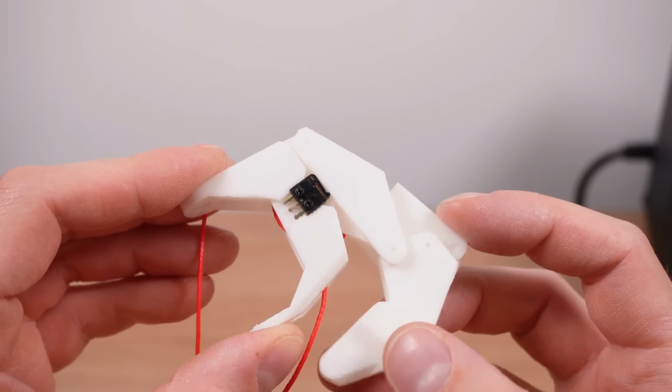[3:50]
So now I'd managed to elegantly solve the pivot point issue, my attention was drawn to this big ugly switch, haphazardly screwed onto the side of each finger. Now the idea here is that because with all of these tendons and pulleys, and with all of the tension in the system, the fingers need a way to continuously update their position in lieu of any kind of rotational positional sensor. So the fingers have a limit switch, meaning that whenever they're in this position, they have the feedback to say they are where they think they are.
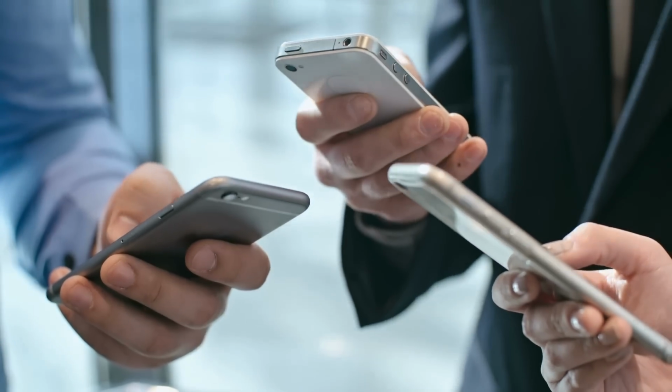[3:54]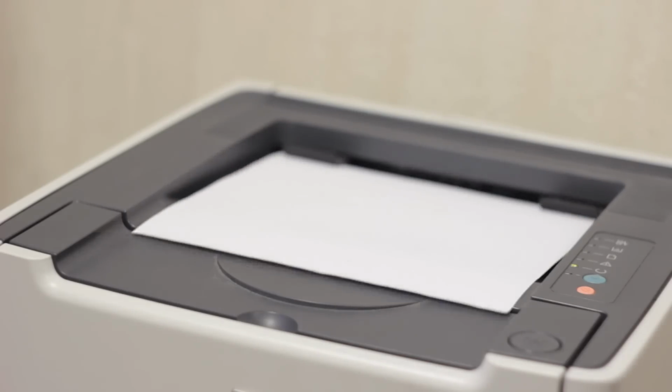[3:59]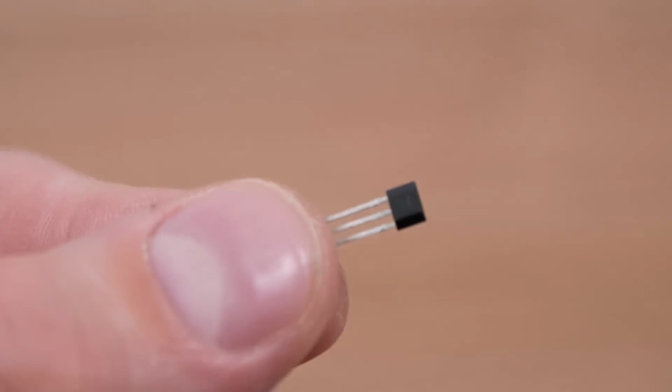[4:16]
Do you ever wonder why a mobile phone lasts several years of hourly daily use, while other gadgets like printers, gaming controllers, and headphones have a fraction of the lifespan, even though we're using them a lot less? It's because mobile phones have almost no moving parts, other than the 0.5 millimeters of travel on the volume switch. So for this reason, I decided to switch from physical limit switches to Hall effect sensors. It's basically a switch which is triggered by a magnetic field, and it means I can find the home position of my fingers without any physical contact.
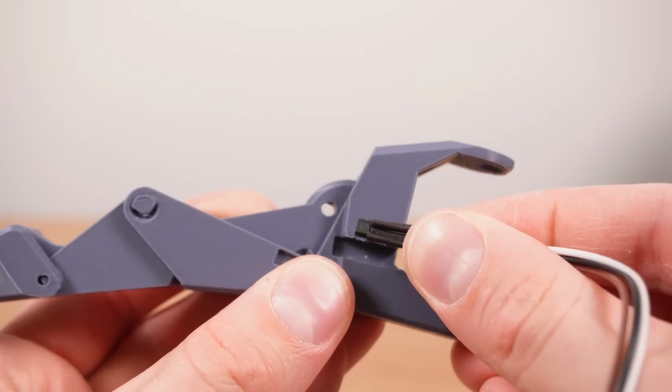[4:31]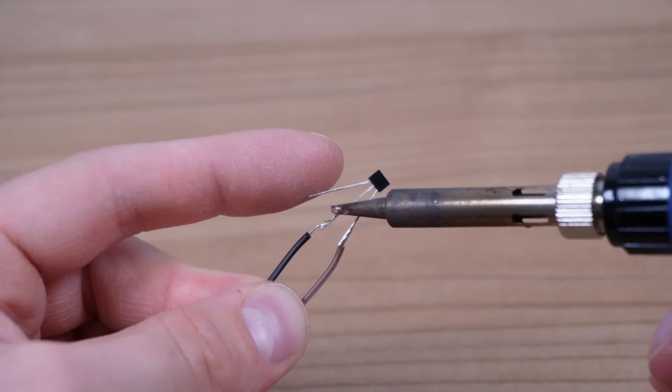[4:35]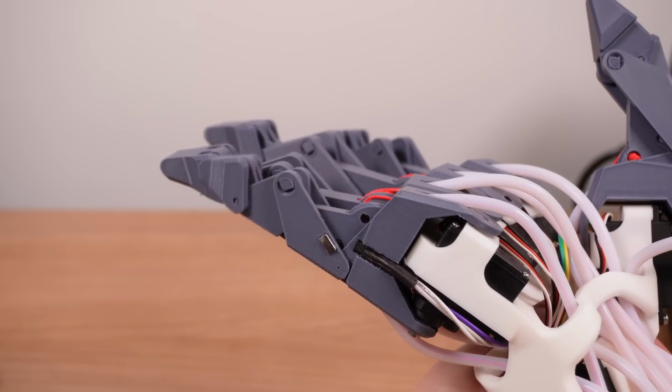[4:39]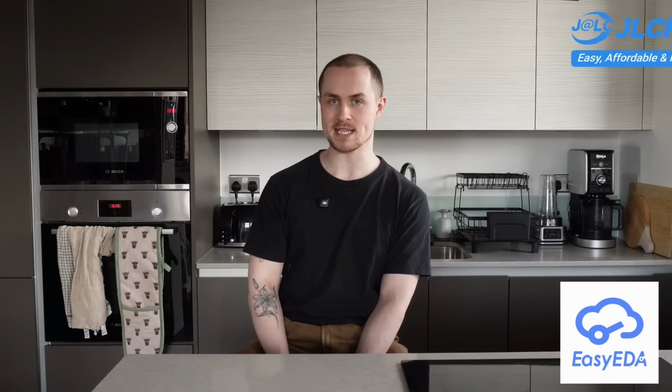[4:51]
Now, I just gave this whole spiel about the elegance of fully self-contained and print-in-place mechanisms, and here I am haphazardly supergluing sensors with big ugly hand-soldered joints onto the side of my beautifully optimized design. What I would really like to do is to design a tiny custom PCB to house the Hall effect sensor and maybe give it some kind of adjustable mounting so that I can fine tune the home position of each finger. And you already know I would design it in EasyEDA and get JLCPCB to make it.
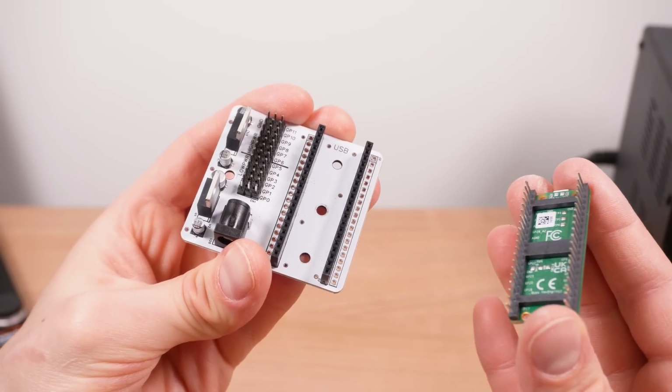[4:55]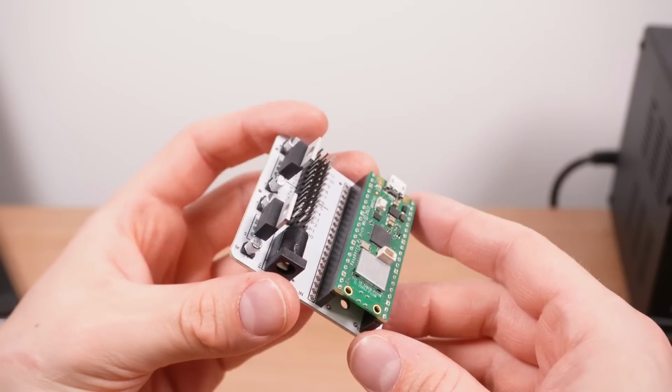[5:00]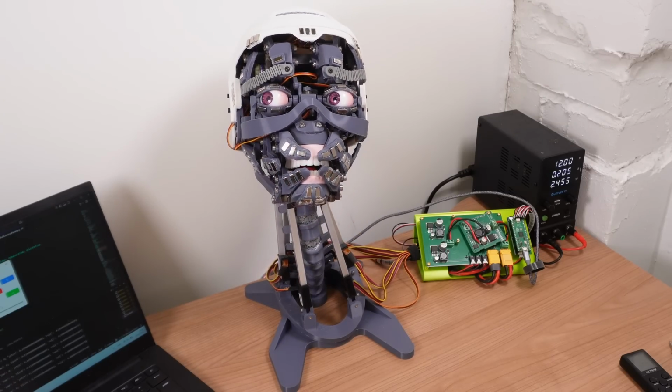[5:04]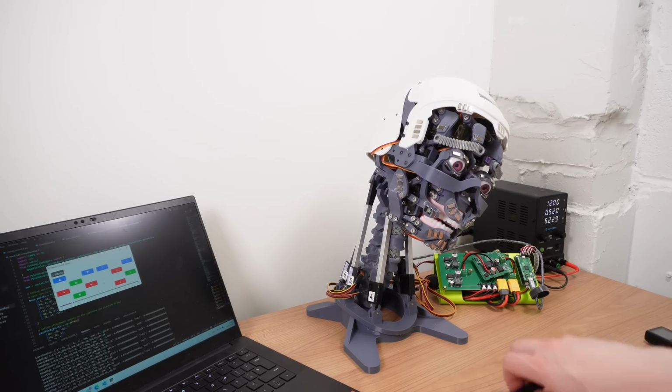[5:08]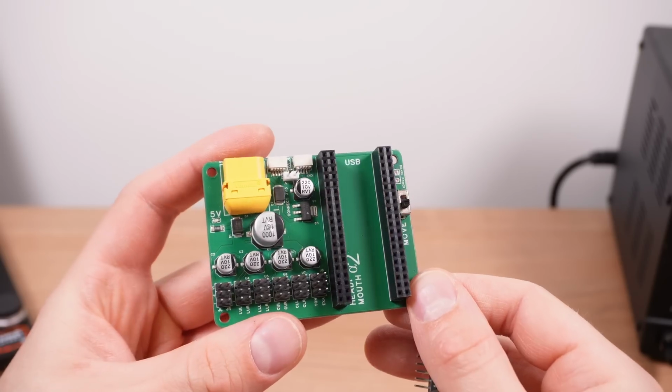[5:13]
As for the electronic system, last time I used this pretty simple board which drove all of the servos from a Raspberry Pi Pico. Since designing that one, however, I had worked on my robot head, wherein I designed a much higher power and more robust board for that. And that one coincidentally used the same number of servos, so I decided to order some extra ones from JLCPCB with a few modifications to allow me to use it in this design.
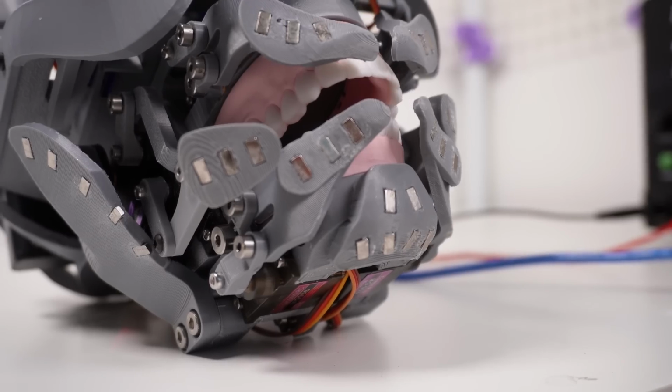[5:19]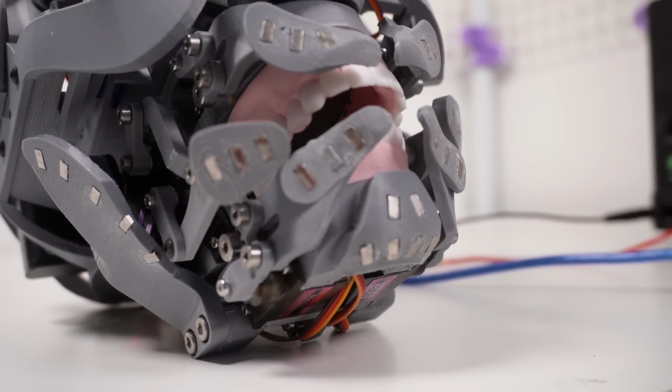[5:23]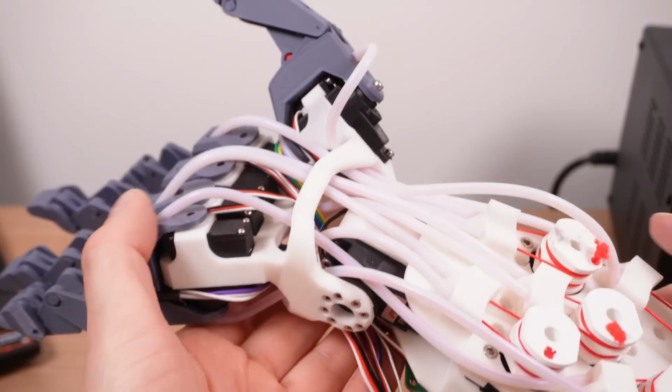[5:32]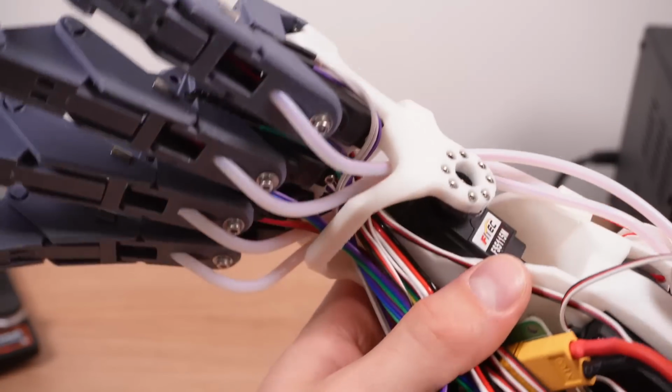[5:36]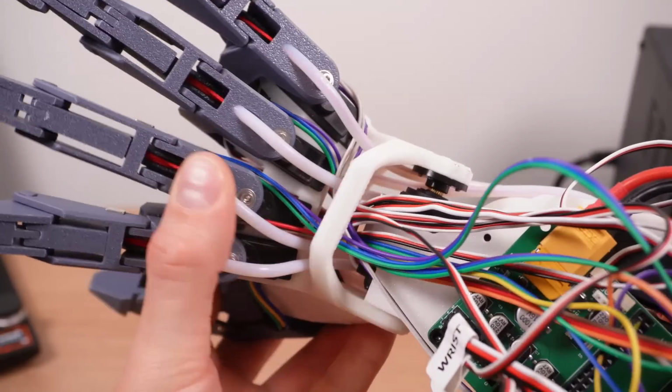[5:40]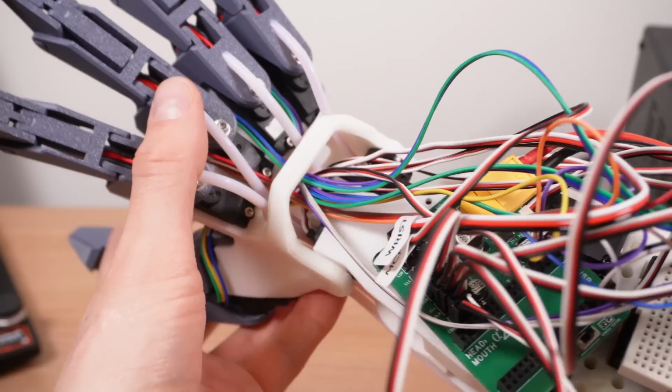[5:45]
The key difference is that on my mouth design, all of those servos had their own positional sensors, and so I only needed to send commands directly to them. But now I have signals I need to process for my homing system, and so I need a whole load of new inputs for those. Thankfully, with the design of the Epsilon hand, I had really given a lot of thought to the cable management system ahead of time, and it meant that all of my new signal cables could be easily routed through the carpal tunnel and into the control board. Just try not to look too close at the base, it does get more prototype-y the further down you go.
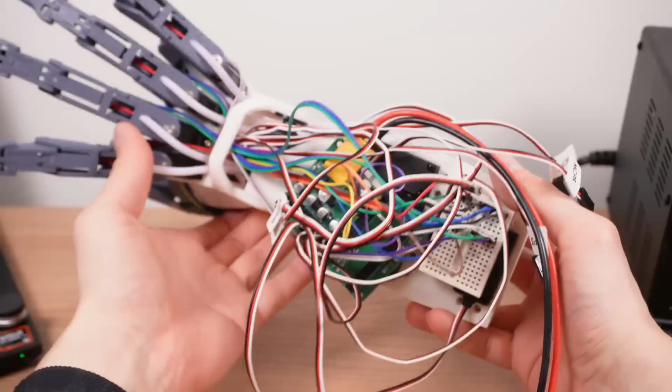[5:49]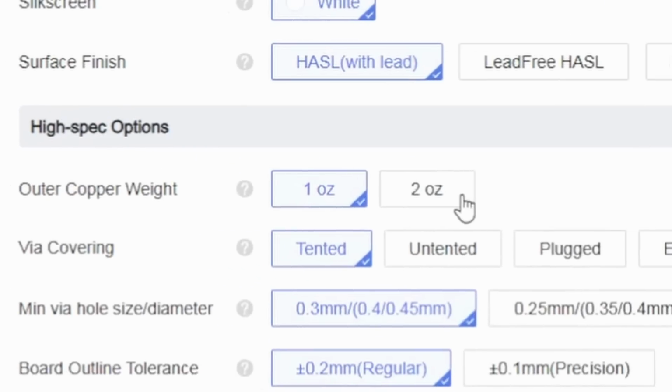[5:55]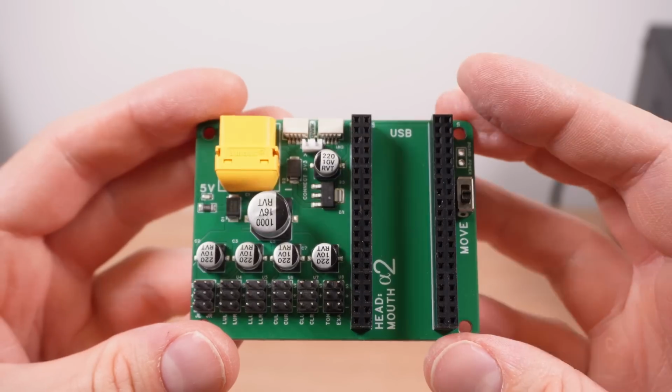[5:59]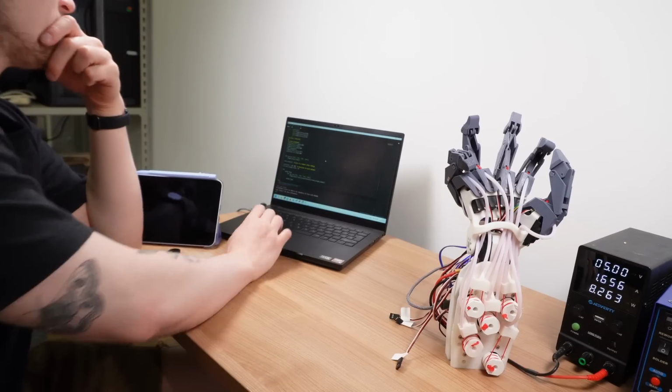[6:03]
Once I got everything powered up, I had a great time working with this board. When I ordered it on JLCPCB, I specified that it should have extra thick copper and big power connectors to cope with the high current of all the servos running at once. And cope it did as I clumsily crashed the motors about, learning how to control the joints.
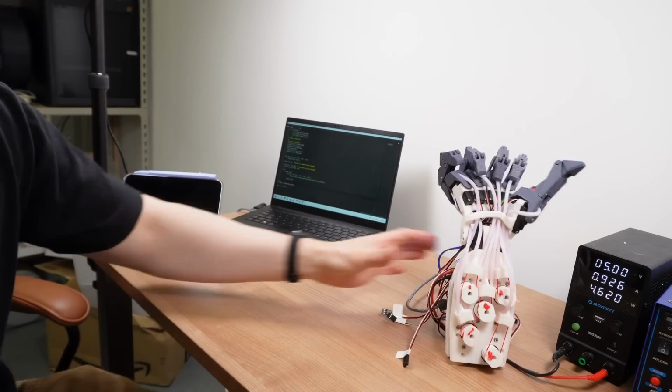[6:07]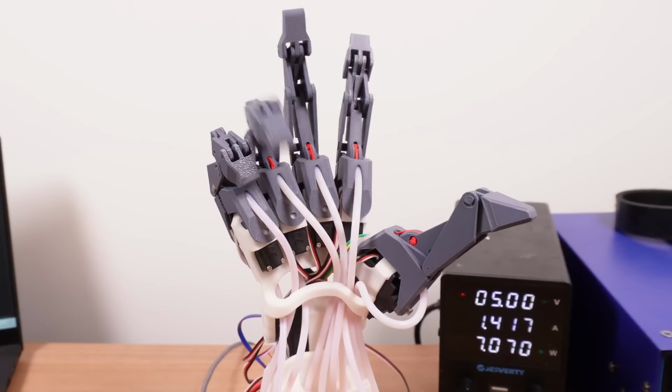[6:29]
So now I'm building the control logic. The first step has to be to home the fingers, because at startup, they have no point of reference as to where they are. So firstly, each one moves to zero and gets its bearings. I have a pretty big issue that the thumb seems to be too long to home itself in some positions.
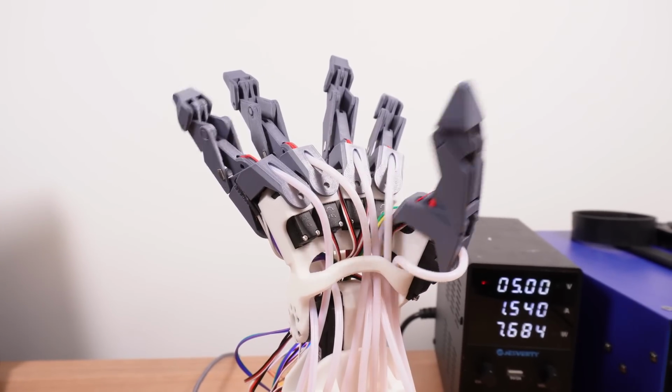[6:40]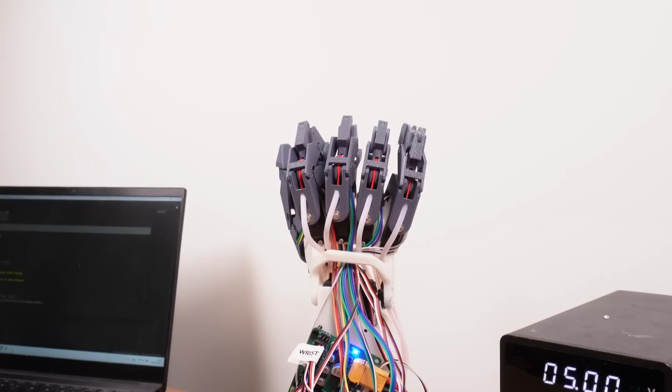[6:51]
So the first step is for the thumb to home itself and then get out of the way to allow the rest of the fingers to home themselves. I then have a script which estimates each finger's position based on how much time has elapsed since it last updated, with updates running every couple of milliseconds.
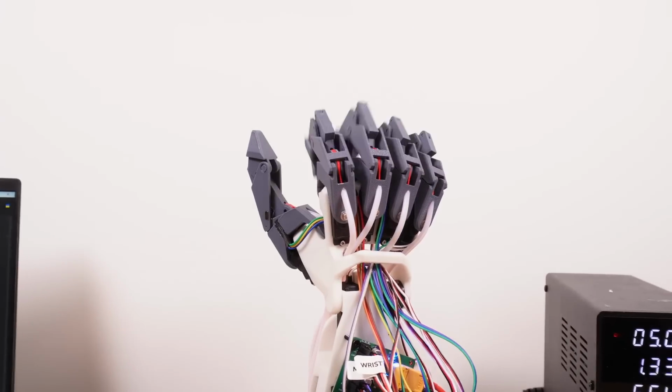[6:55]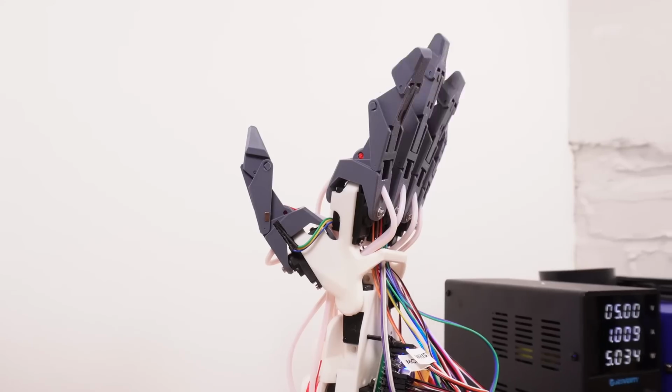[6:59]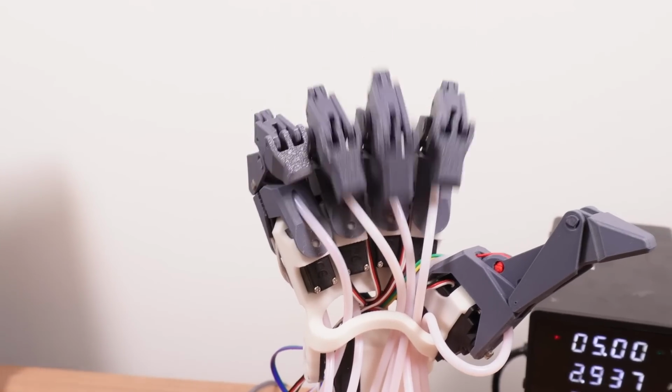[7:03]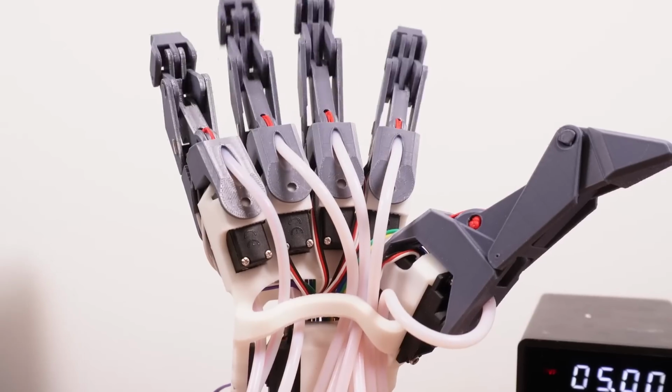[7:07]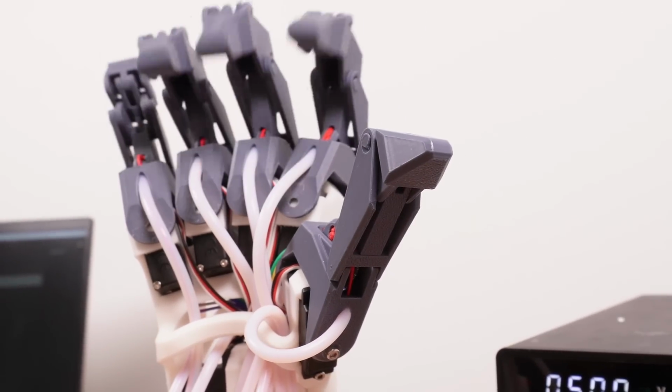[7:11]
I have to admit, this is a kind of brain dump style programming where I've just thrown down some lines of code and got something which works, but I'm pretty sure it's super inefficient. Each finger is its own instance of a class which separately checks and tracks its own position based on the time elapsed. But I think there must be a smarter way to check the time once and then update each finger based on one main clock.
As a result, I can see that I'm overstressing the processor and sometimes getting weird behavior. Like when I have too many servos moving at once, I'm getting some crosstalk with servos copying each other, and occasionally the fingers are just not cooperating at all.
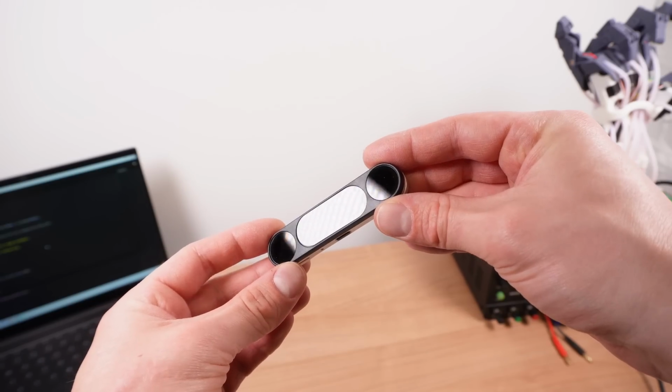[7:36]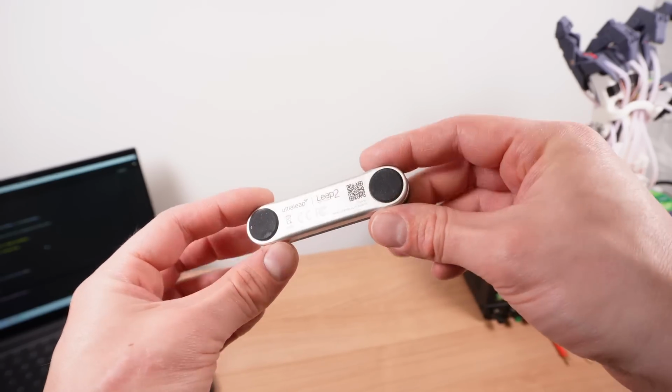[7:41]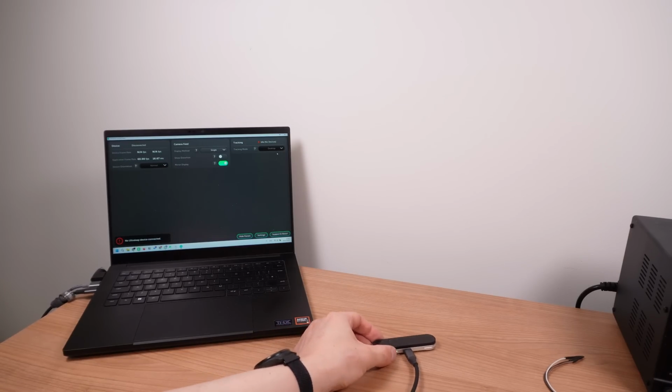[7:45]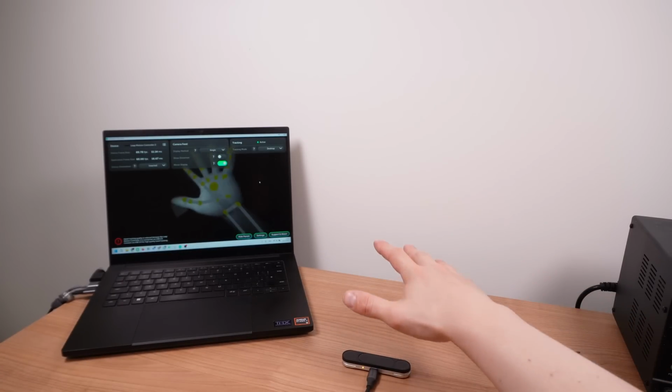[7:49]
The other part that I'm developing in situ is the Unity control platform using the Leap Motion controller, or UltraLeap as it's now called. I definitely don't think Unity is a necessary part of the system, like there's no reason I can't just go directly from the Leap Motion controller to the hand, but for now I really need to see what's going on visually in order to figure everything out.
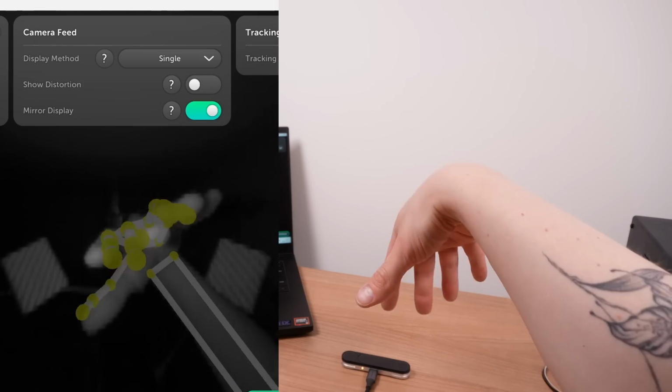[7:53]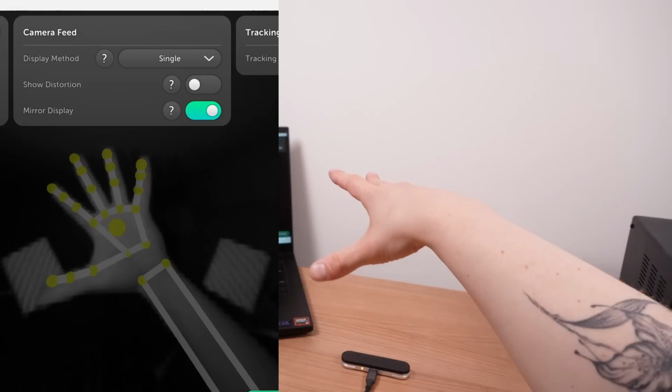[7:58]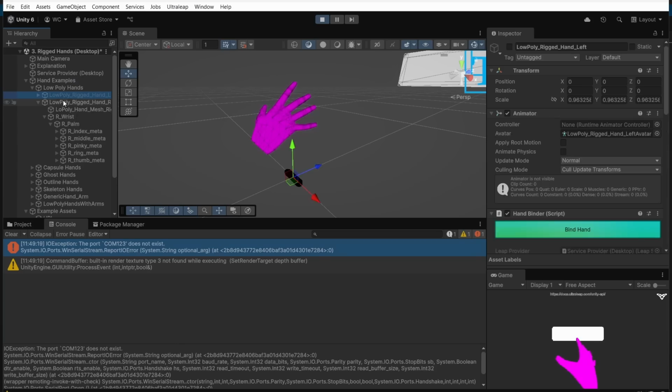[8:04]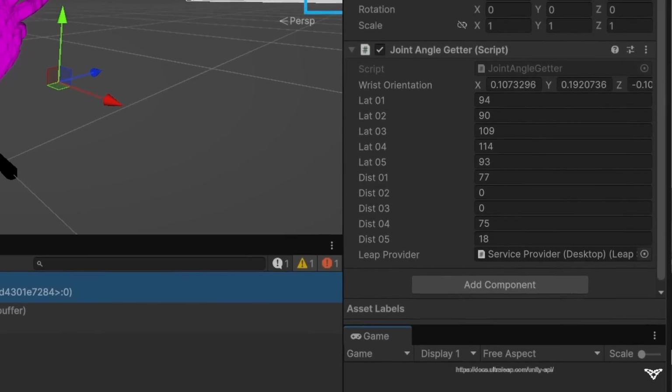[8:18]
I built most of this system when I worked on the previous version of the hand, but the more I delve into it, the more I can see it's actually just not really working correctly. At a high level, the way it works is that it finds the position of each bone of the hand in space. Now obviously that's far too much information, because we don't care about my hand's position in space, we care about each bone's position relative to its parent bone, which will give us joint angles. So I get the position of the parent bone and then find the difference between the two, and in theory that gives me a target for the servo to move to.
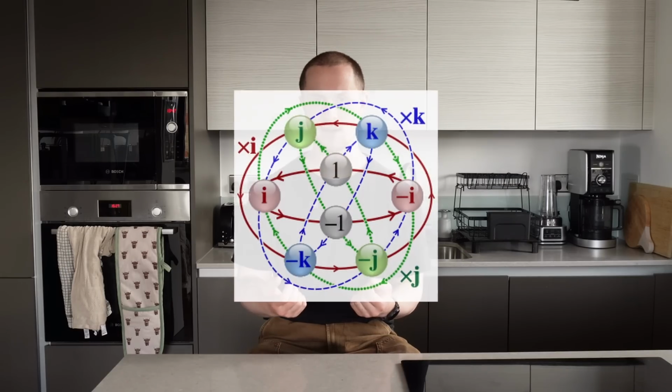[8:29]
The difficulty comes from the fact that I have to do this using quaternions, which are a really smart but really scary way of defining position and rotation that Unity likes to use. So I attempt to find the difference between the quaternion defining the palm's position and the quaternion defining the first finger bone's position, and then I try to convert that into degrees. But there's all kinds of cases where maybe I don't know which axis I should be using, or maybe there's an angle which goes down to zero and then instantly wraps back around to 360 degrees. Basically, I thought I understood this when I worked on the Delta hand, but now that I understand it a bit more, I've realized that I actually don't understand it at all.
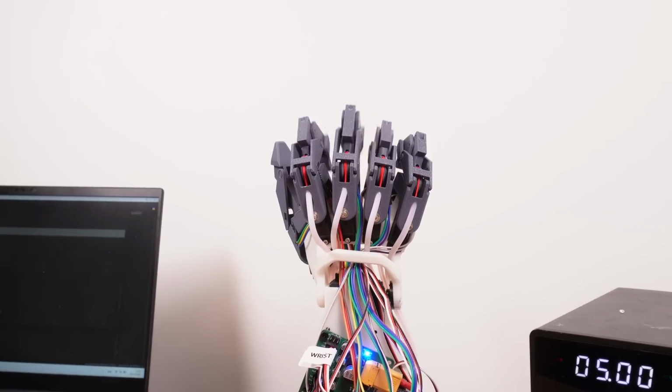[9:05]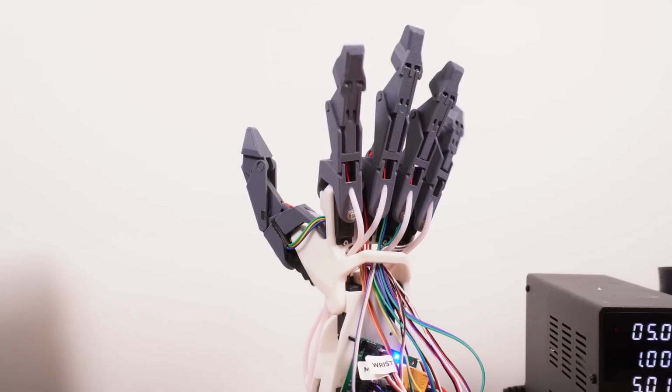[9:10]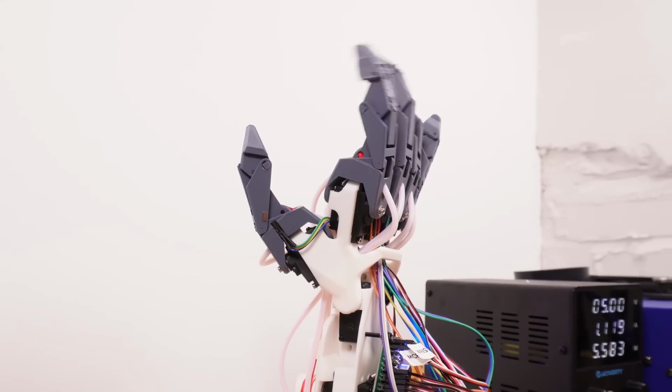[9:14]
So right now, I'm not comfortable with releasing this design publicly. I will be changing how the sensors mount, the housing, the electronics, and making sure that there are no collisions. And I don't want to release a design that doesn't work.